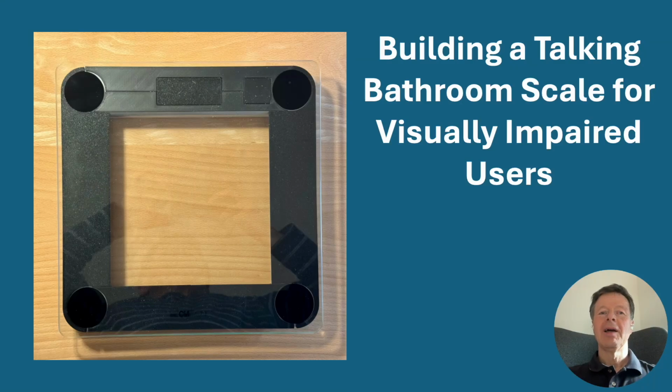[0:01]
Hello and welcome. In this video, I will show how I transformed a standard bathroom scale into a talking scale for visually impaired users. The original load sensors and mechanics were reused, while the electronics were replaced with a custom ESP32S3 based design. The finished device announces the measured weight through a loudspeaker, supports battery or USB operation, and can be configured wirelessly. All hardware and software will be released as open source. Let's start with a quick demonstration.
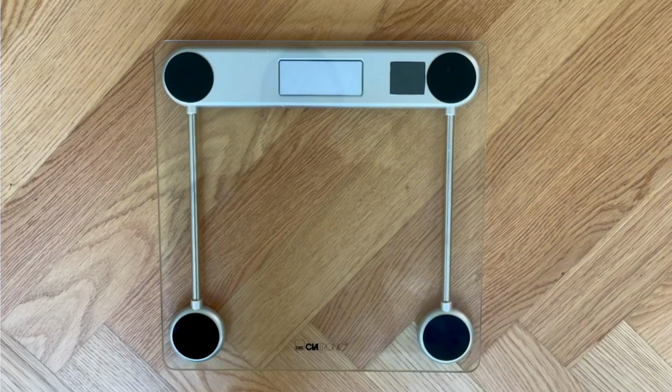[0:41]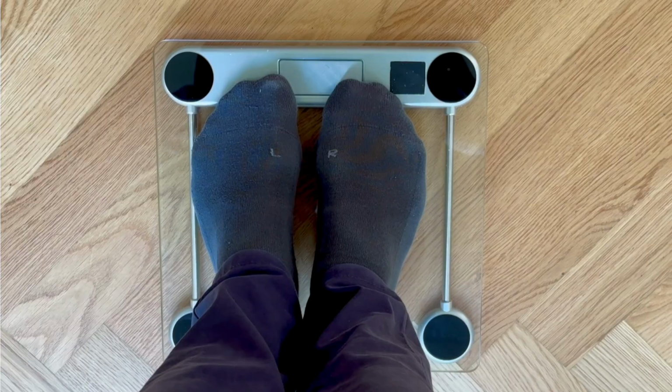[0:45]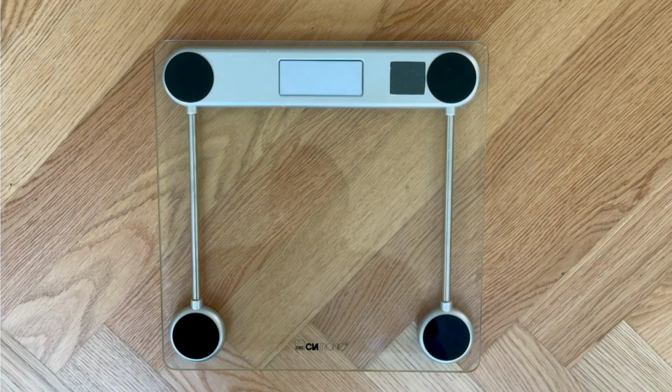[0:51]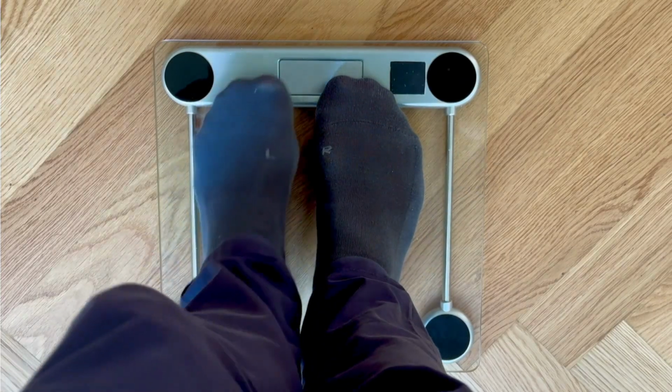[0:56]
159.0 pounds. 159.0 pounds.
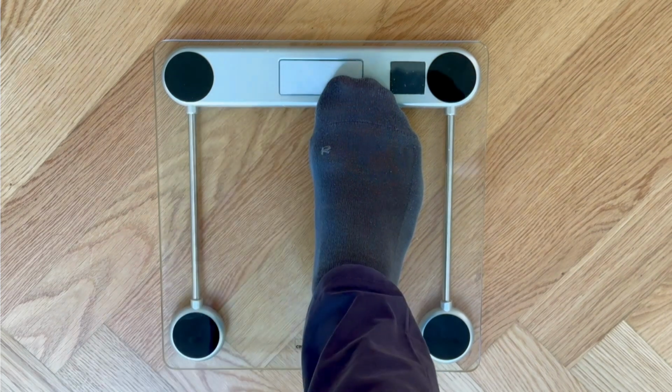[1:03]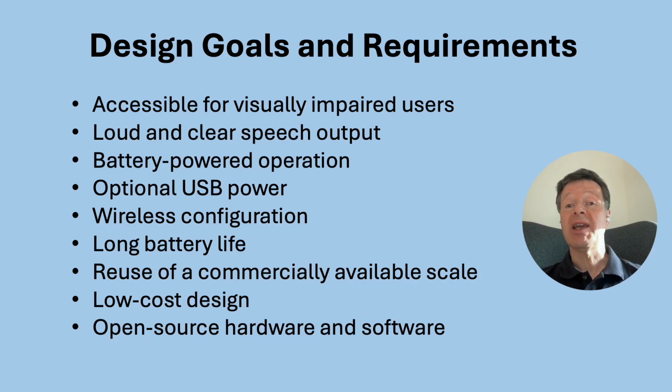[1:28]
Before starting the hardware design, I defined a set of goals and requirements for the project. The main objective was to create a practical and accessible bathroom scale for visually impaired users while keeping the design simple, affordable, and easy to reproduce. I also wanted to reuse an existing commercial scale, provide a convenient wireless configuration interface, and achieve long battery life without sacrificing usability. Finally, all hardware, firmware, and mechanical designs should be released as open source, allowing others to build upon the project and adapt it to their own needs.
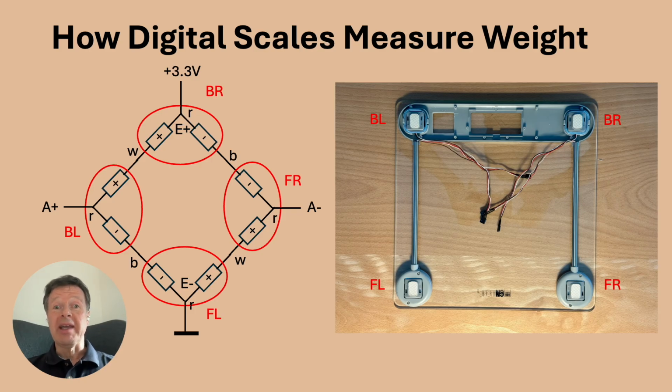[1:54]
To reuse the mechanics of the original scale, I first needed to understand how the weight sensors work. The scale contains 4 identical load sensors, one in each corner. Each sensor forms a half bridge consisting of 2 strain gauges whose resistance changes slightly when force is applied. The 4 half bridges are connected to form a Wheatstone bridge. The wiring is arranged so that the resistance changes add up, maximizing the output signal.
A supply voltage is applied across the bridge, while a differential voltage is measured between its 2 output nodes. Without any load, the bridge is balanced and the output is close to zero. When someone steps onto the scale, the bridge becomes slightly unbalanced, producing a small voltage proportional to the applied weight. On the right side, you can see the disassembled scale with the 4 load sensors and the wiring.
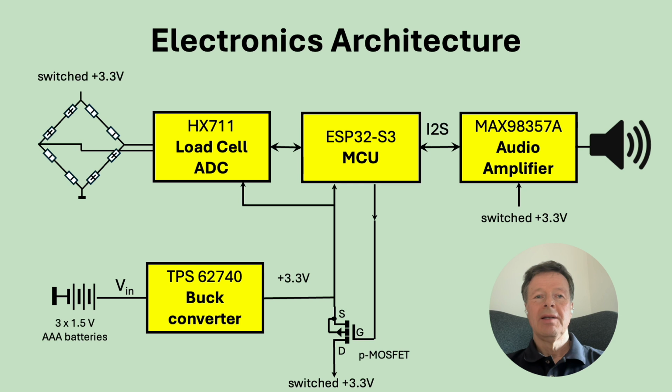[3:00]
This block diagram shows the overall architecture of the talking bathroom scale. The Wheatstone bridge generates a small differential signal proportional to the applied weight. This signal is amplified and digitized by the HX711 and then processed by the ESP32S3 microcontroller. For the voice announcement, the ESP32 sends digital audio data to the MAX98357A audio amplifier, which drives the loudspeaker.
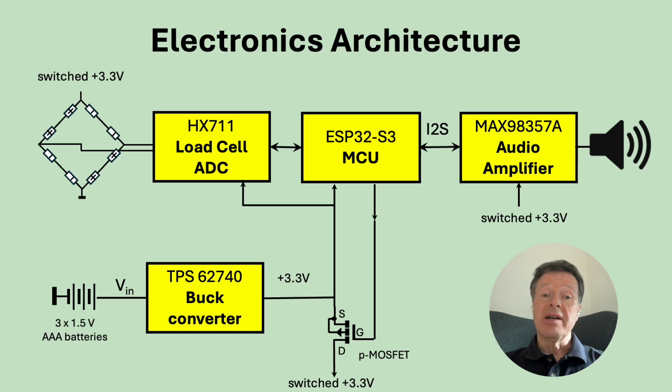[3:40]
The lower part of the diagram shows the power supply. 3 AAA batteries feed a TPS62740 buck converter, providing a regulated 3.3 volt supply. A P-channel MOSFET allows the ESP32 to switch power for the load cell bridge and audio amplifier. Since these are among the largest power consumers, disconnecting them during deep sleep significantly reduces energy consumption. As a result, the scale can achieve very long battery life while remaining ready for immediate use.
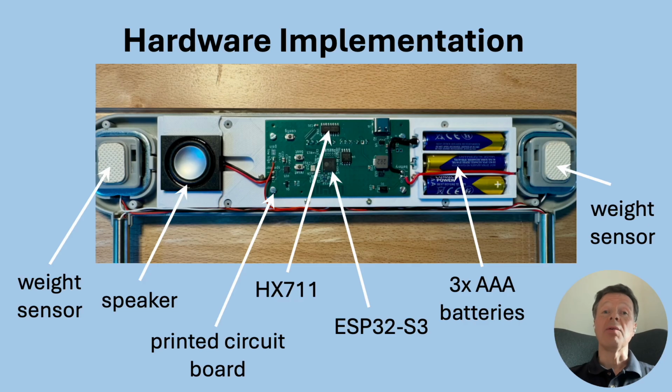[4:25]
This slide shows the complete hardware installed inside the original scale housing. One of the design goals was to reuse as much of the existing mechanical structure as possible. Instead of modifying the enclosure itself, all new components are mounted on a custom 3D printed carrier that fits into the available space inside the scale. On the left side, you can see the loudspeaker used for the voice announcements. The model was chosen to provide high volume while making efficient use of the available space.
In the center is the custom-designed printed circuit board. This board contains all the electronics required for the project, including the ESP32S3 microcontroller, the HX711 load cell ADC, the MAX98357A audio amplifier, and the TPS62740 power supply. On the right side, the 3D printed carrier integrates a battery compartment for three AAA cells. This provides a compact and reliable power source while keeping battery replacement simple for the user.
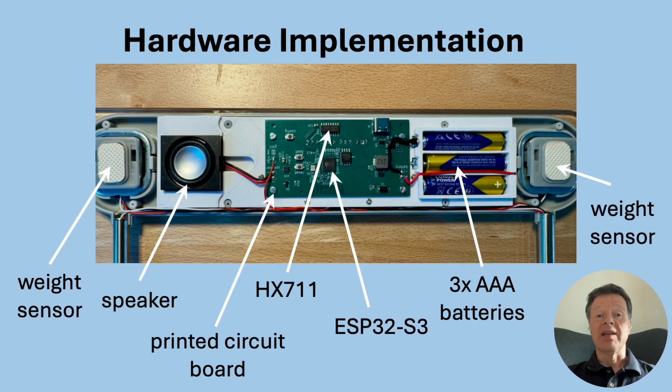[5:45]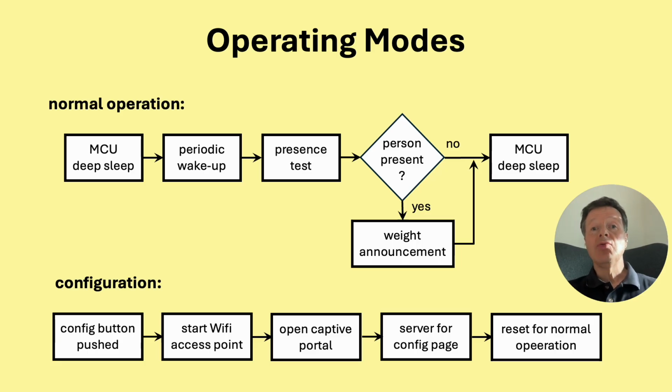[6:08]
The result is a clean, mechanically robust assembly that fits entirely within the original scale enclosure. From the outside, the scale looks almost unchanged, while internally it has transformed into a fully voice-enabled device with wireless configuration and long battery life. The firmware supports two operating modes, normal operation and configuration mode. During normal operation, the ESP32 spends most of its time in deep sleep. It periodically wakes up, performs a quick weight check, and immediately returns to sleep if no person is detected. When the measured weight exceeds a configurable threshold, a full measurement is performed and the result is announced through the loudspeaker.
The configuration mode is entered by pressing the configuration button. The ESP32 starts a Wi-Fi access point and provides a captive portal that can be accessed from a smartphone, tablet, or a computer. Using the web interface, the user can adjust settings such as the weight unit, language, and calibration parameters. Once the configuration is complete, the device is restarted and returns to normal operation.
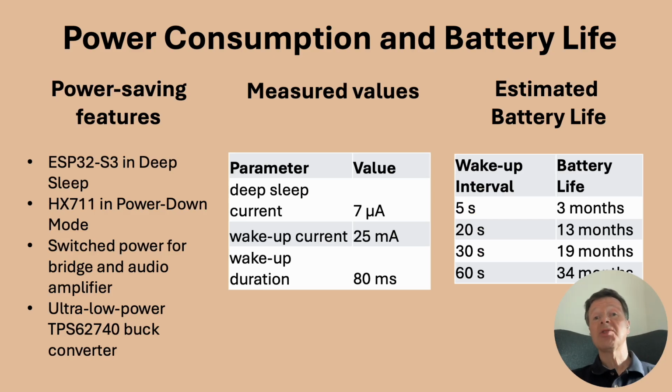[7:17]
Power consumption was an important design goal because the scale is intended to run from three AAA batteries. To minimize energy usage, the ESP32 spends most of its time in deep sleep. The HX711 is placed into power down mode, and both the load cell bridge and the audio amplifier are completely disconnected using a switched power rail. As a result, the measured sleep current is only 7 microamps.
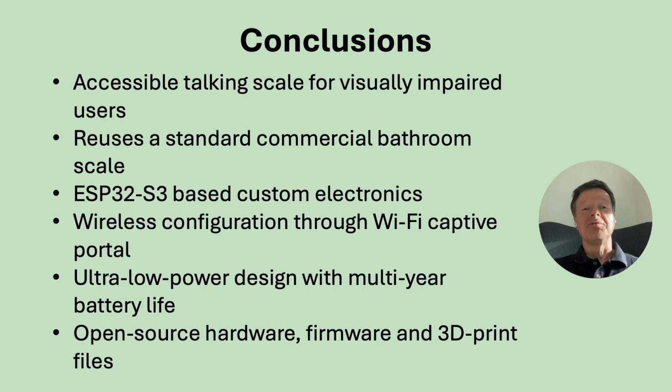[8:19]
Every few seconds, the system wakes up briefly to check whether someone is standing on the scale. This wake-up phase consumes about 25 milliamps for only 80 milliseconds. Based on these measurements, the expected battery life ranges from about 1 year to almost 3 years, depending on the selected wake-up interval. Well, here are my conclusions.
In this project, I transformed a standard bathroom scale into a talking scale designed for visually impaired users. By reusing the existing mechanics and load sensors, only the electronics needed to be replaced, resulting in a cost-effective and practical solution. The ESP32S3 platform provides both the processing power for the voice announcements and a convenient wireless configuration interface through a captive portal. Special attention was given to power consumption, allowing the device to operate for extended periods from just three AAA batteries. All hardware design files, firmware, source code, and 3D print models will be released as open source, making it easy for others to build, modify, and improve the design.